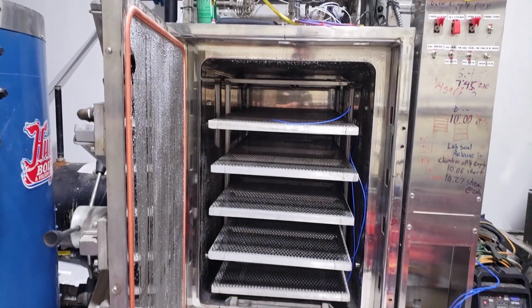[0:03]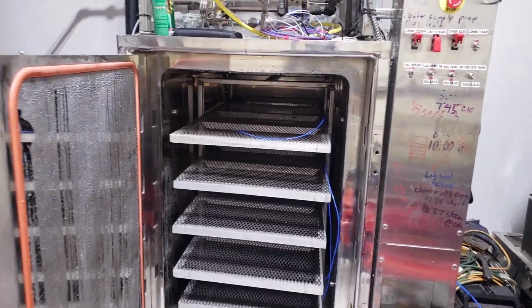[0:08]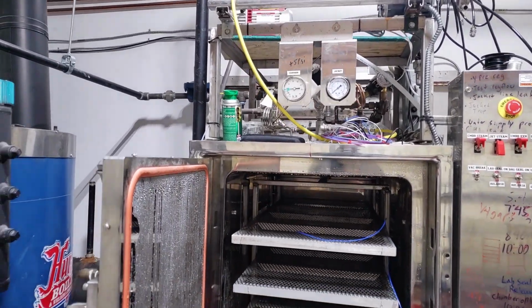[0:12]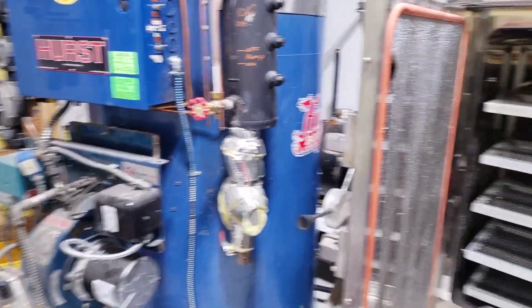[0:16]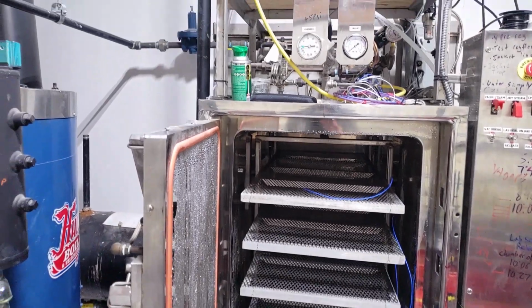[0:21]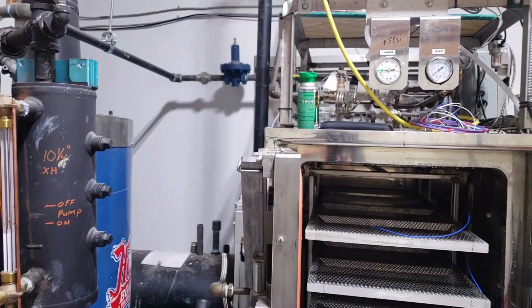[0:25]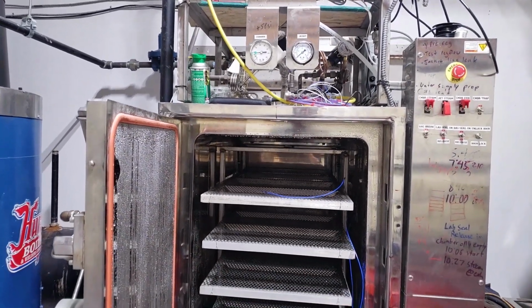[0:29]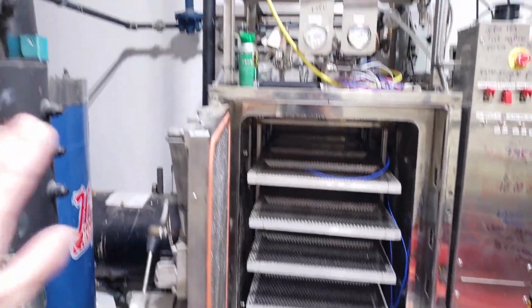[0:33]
All right, welcome. This video is going to be about adjusting and fixing some mistakes that I made on my autoclave. As you know, I have my Hurst 15 horsepower boiler, and I have my 2x3x4 foot double door autoclave for spawn production. Well, we were having a little bit of issues with it coming to pressure in time. It was taking about an hour and a half, almost 2 hours to come up to pressure. And I realized that I've done a couple of things wrong up on the steam supply side.
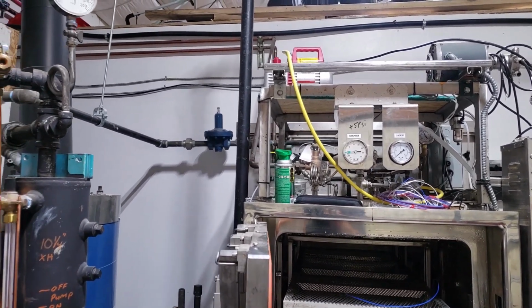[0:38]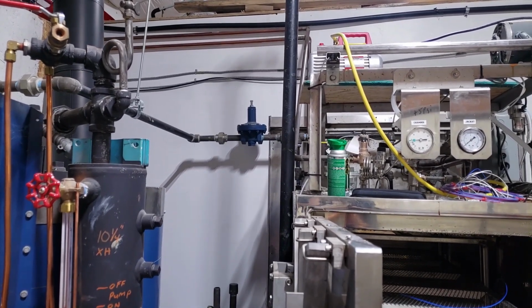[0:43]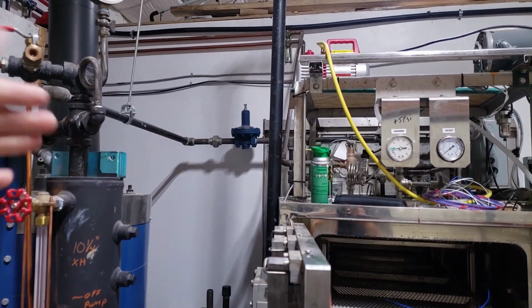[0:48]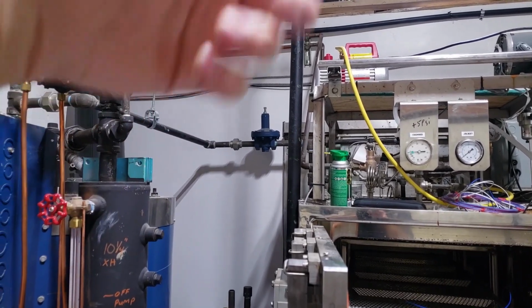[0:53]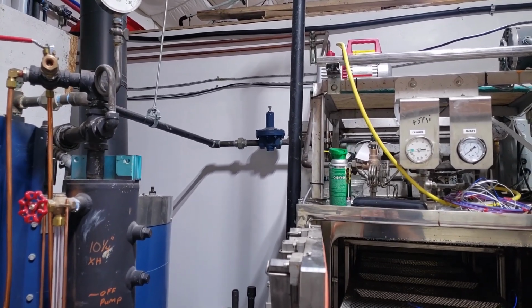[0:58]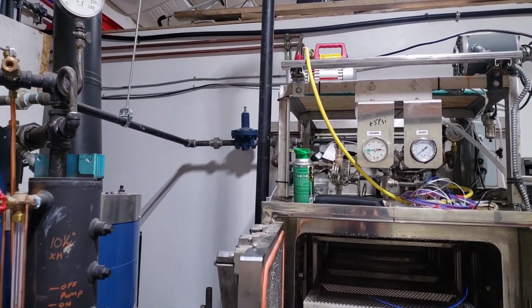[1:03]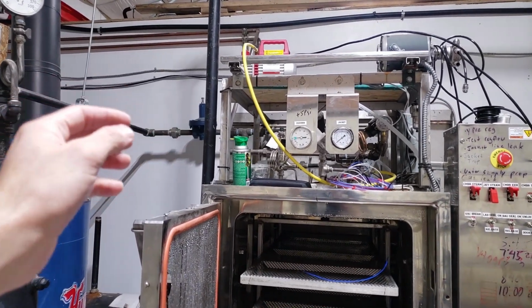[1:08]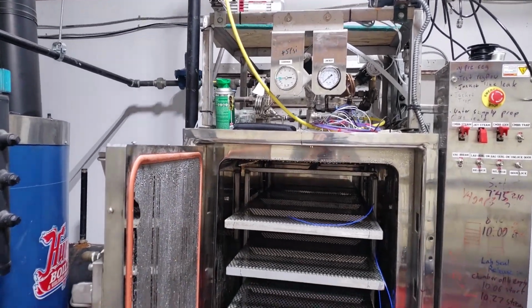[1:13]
One of the major things is that regulator. That regulator is, I believe the term is a direct operating regulator. So basically there's a diaphragm that when the pressure is below a certain amount, the spring lets the pressure go to the other side, okay? The downside of that is it doesn't allow the volume that I need, especially when there's only a couple PSI difference. Like if this is up to 14 PSI and I need to get it to 15 and there's 30 on that side, it's going to be barely cracked open when in reality it should be full wide open while it's pushing all of the steam in, okay?
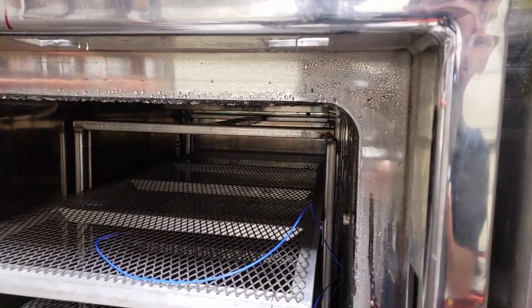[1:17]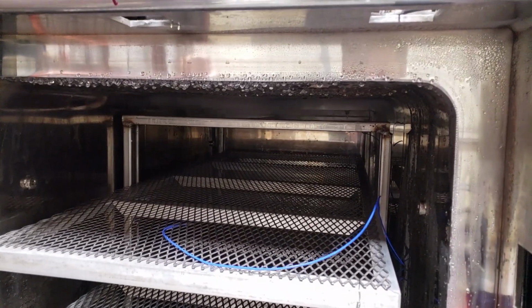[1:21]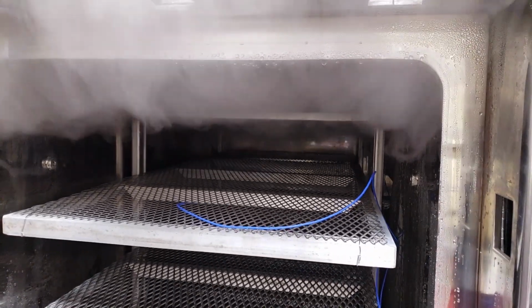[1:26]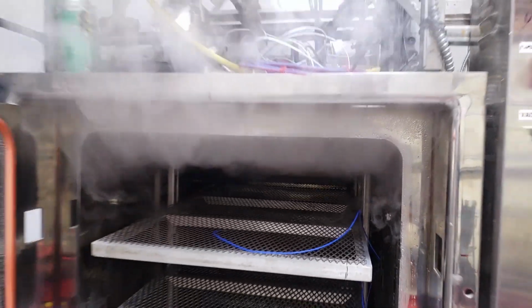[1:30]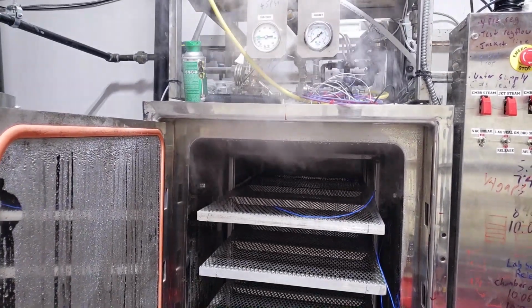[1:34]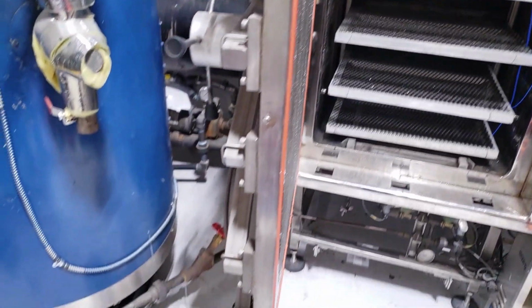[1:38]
So you'll see right here, I'll do a quick example of the chamber steam. Okay. So that's how fast it is right now. Hopefully I'll be able to do an after video, hopefully at the end of this video, after I replace that regulator with a pilot operated valve.
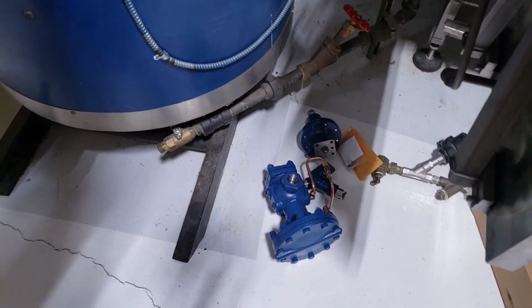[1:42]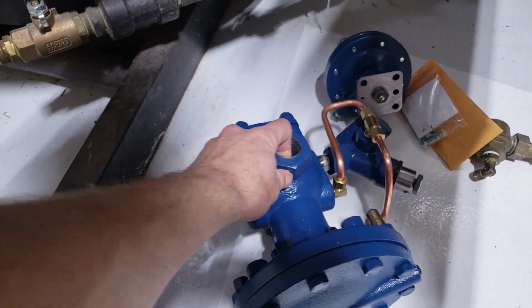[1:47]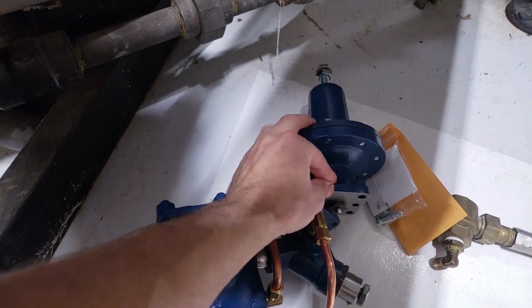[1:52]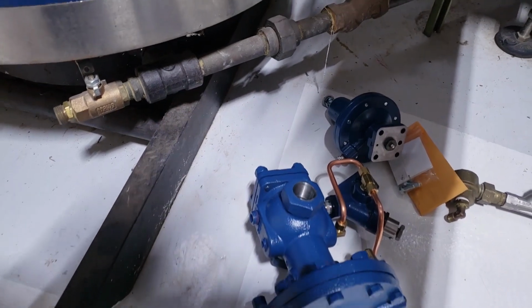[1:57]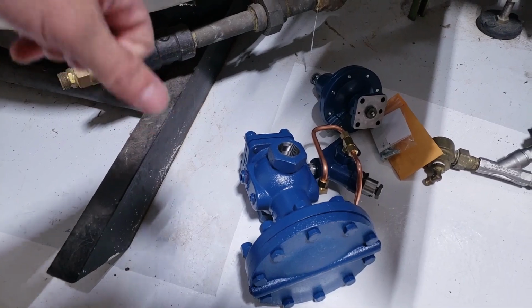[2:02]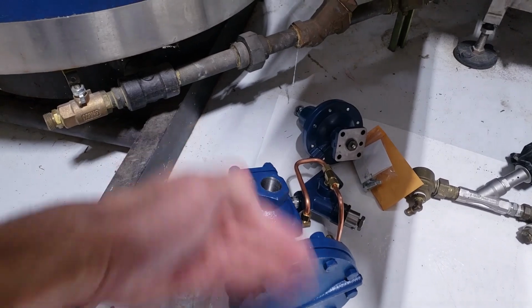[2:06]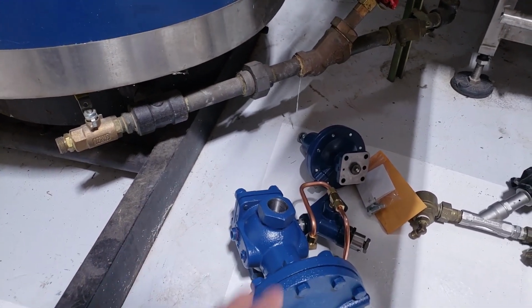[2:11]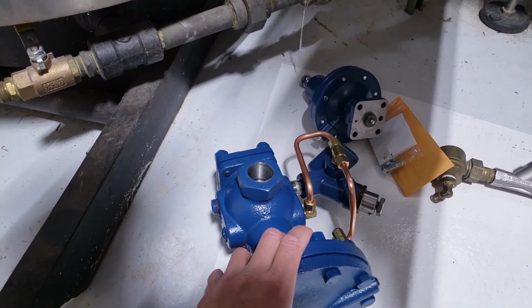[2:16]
So this one works a little bit differently. It has the same diaphragm and valve, but what operates that diaphragm is this secondary pilot. What happens is when this pilot is reading low pressure, it fully opens the entire diaphragm. So one, it'll flow more, and two, it's less likely to clog because it's slamming open and shut versus the other one, which is just kind of cracking and whatnot. This one cost about $800, so it definitely was more to buy, but I should have bought this in the first place.
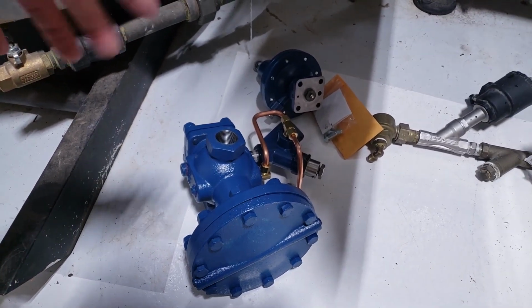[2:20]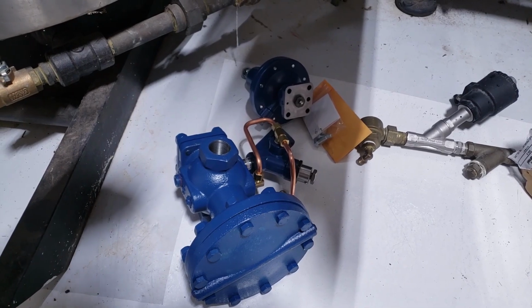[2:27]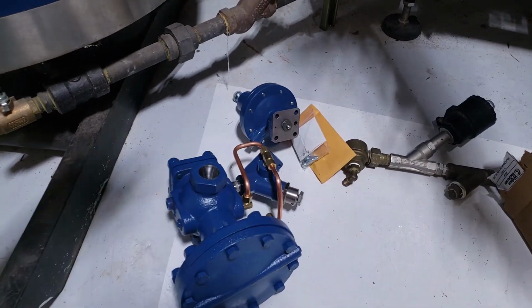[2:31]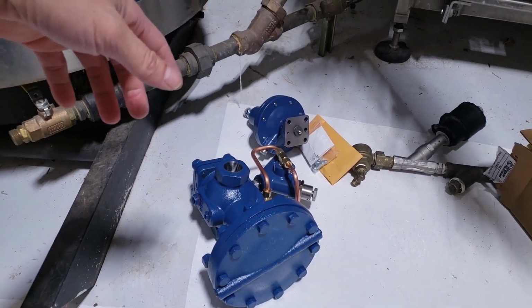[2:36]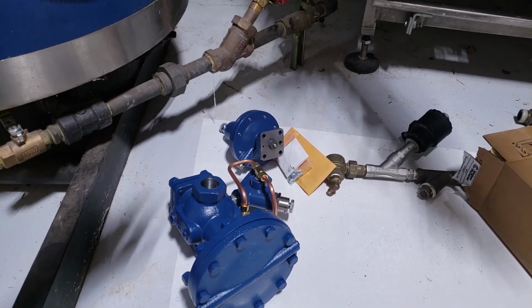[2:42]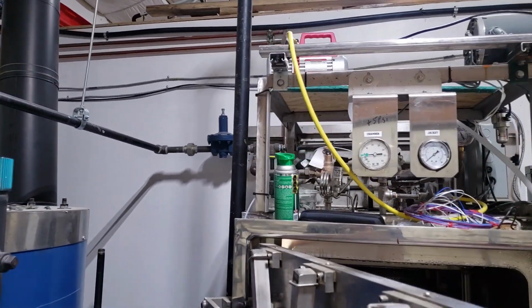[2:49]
It's definitely one of those things where the boiler installer was not really familiar with autoclaves, neither was I, and I probably should have paid somebody to look over it. This is definitely where consulting and having a professional do stuff saves you money in the long run, because this mistake cost me probably a couple $1,000s in spawn production because we haven't even started yet because of this. And on top of that, $600 in a regulator that is going to sit on a shelf now because I bought the wrong one up here. So I'm going to go ahead and get started.
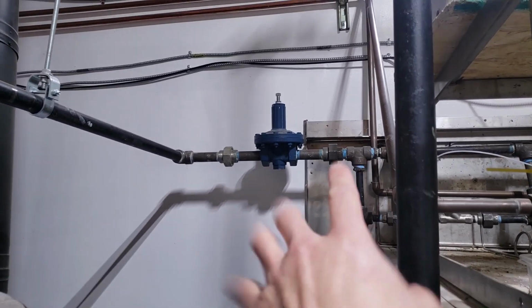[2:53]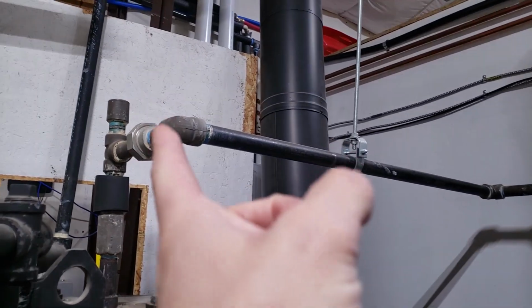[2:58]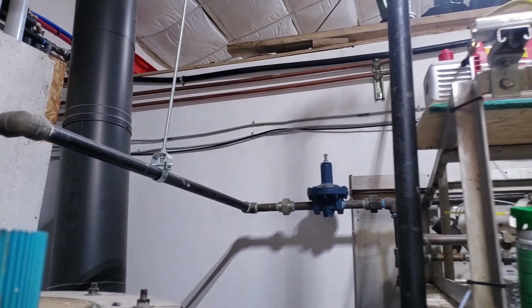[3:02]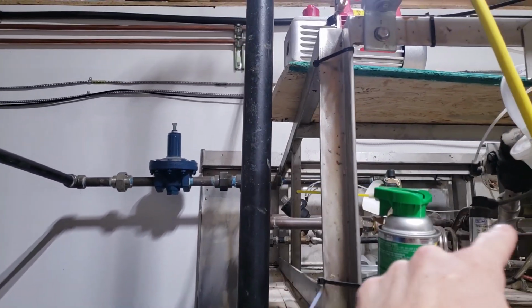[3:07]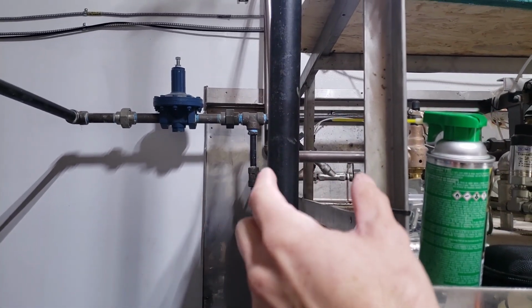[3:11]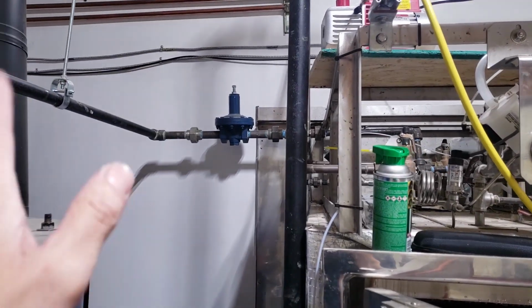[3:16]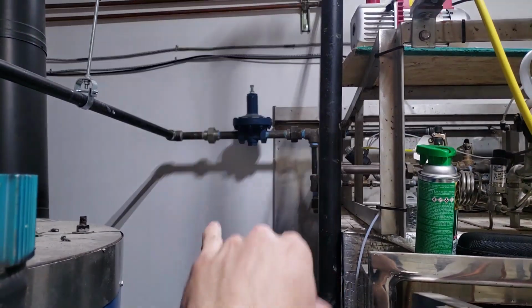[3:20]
One thing that I'm glad that we did, you can see these unions. That makes it very easy. Whenever you're doing steam fittings or natural gas, make sure you put unions in whenever you do a branch. It makes it a lot easier to maintain parts. So we have a union there. We also have another union, I want to say further down around the control valve. That way if we need to maintain that part, otherwise you have to take apart the whole thing just to get at one part. That's the beauty of a union. So I'm going to go ahead and take that union down and put the new regulator up.
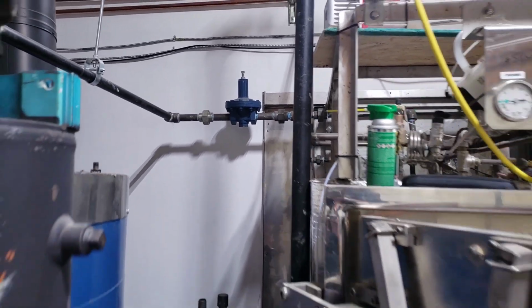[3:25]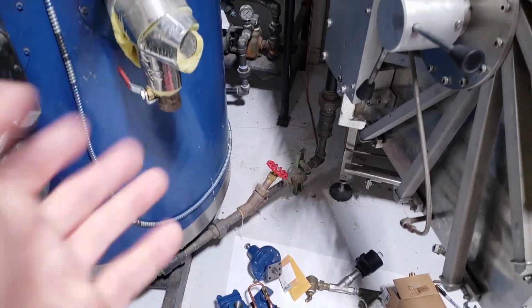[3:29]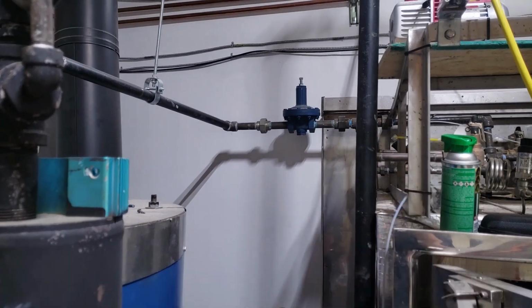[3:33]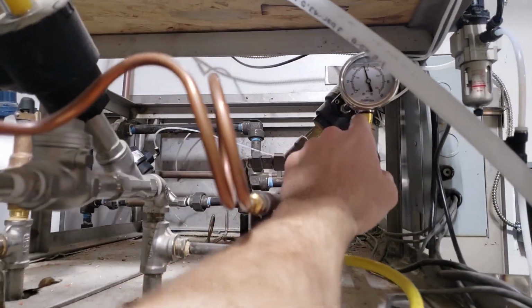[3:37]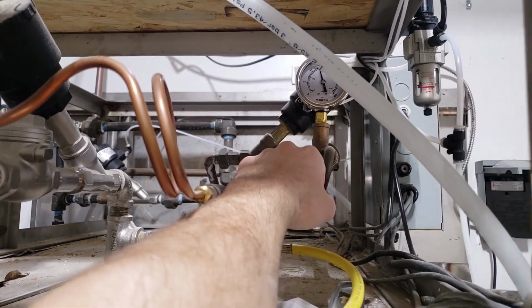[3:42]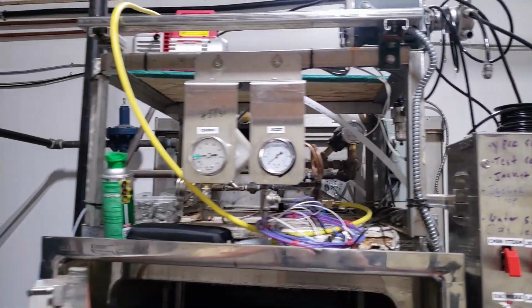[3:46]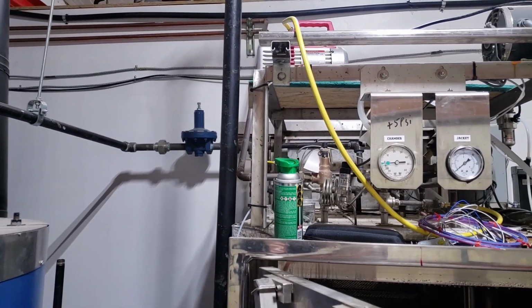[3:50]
The one thing with the pilot is it needs to have a reference that is 10 times the pipe diameter. So this is a 1-inch pipe, it would have to be a reference pressure at least 10 inches down. I'm going to go all the way over here, which is the end of the jacket manifold. I'm going to put a T in there and then tap off of that to get my reference pressure. That way it should have a nice low reading when everything's open, so it'll stay wide open until everything comes up to pressure.
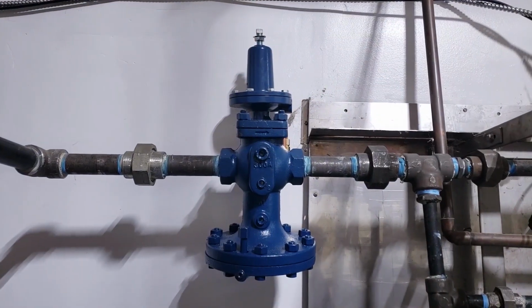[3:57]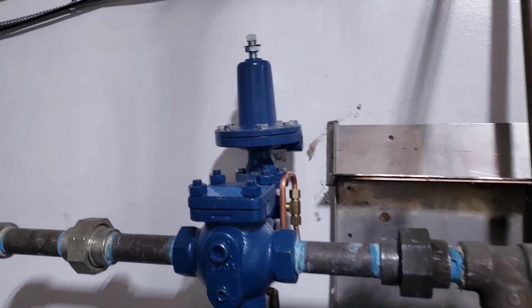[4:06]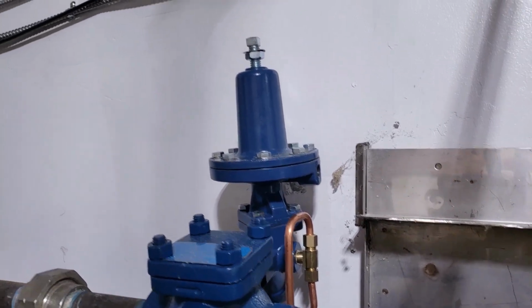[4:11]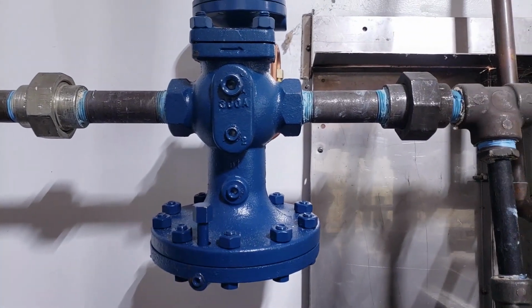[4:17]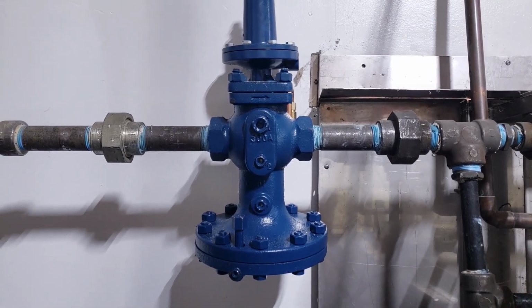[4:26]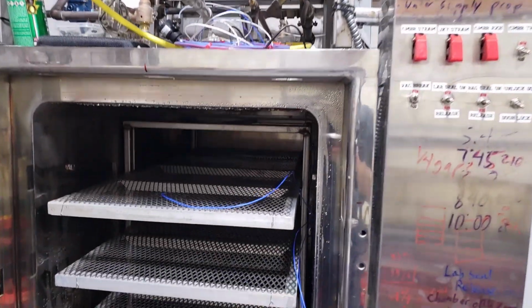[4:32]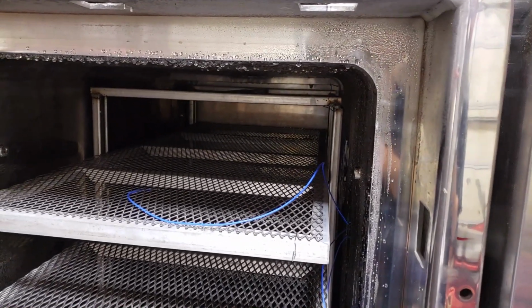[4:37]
All right, welcome back. The pilot operated regulator is now installed. I still have to do the pressure sensor, which goes on the little port in the middle of the picture there on the side of that pilot, on the top regulator. Once again, that pilot operates the big valve to be fully opened or fully shut. So even though I don't have it hooked up, it is still going to be fully open. It won't regulate, but it will fully open and I can test the flow. I already cheated and tested the flow, and what a difference. This should really make a difference with running the cycles. 3, 2, 1.
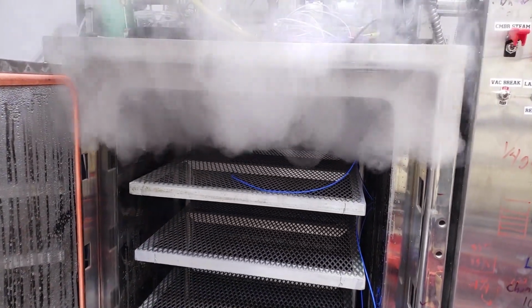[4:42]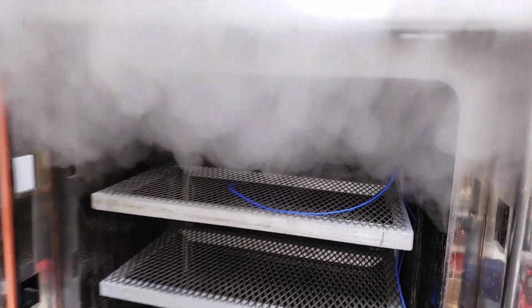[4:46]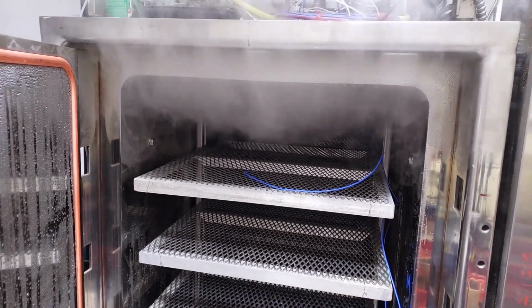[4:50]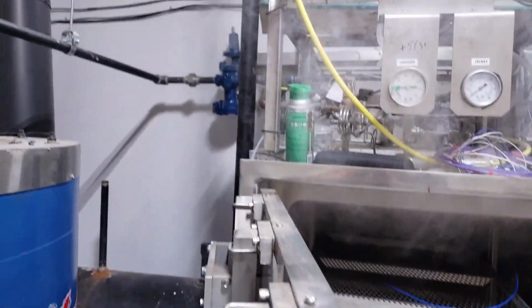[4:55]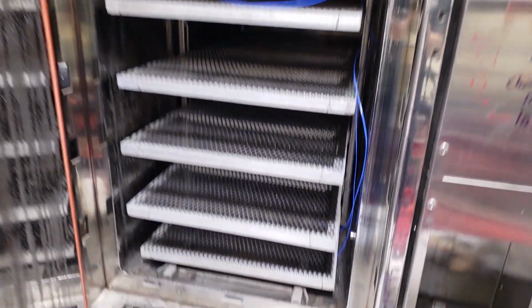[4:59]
Night and day difference. So that I'm very happy about that. Once again, wrong regulator, should have been pilot operated and it wasn't. So the next thing that I'm going to be working on today is my traps.
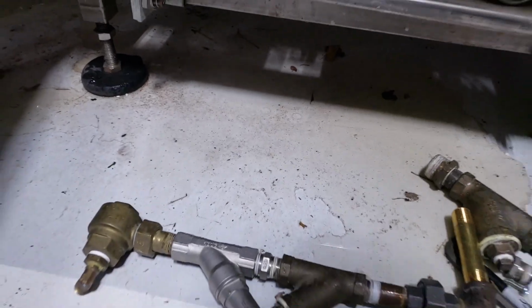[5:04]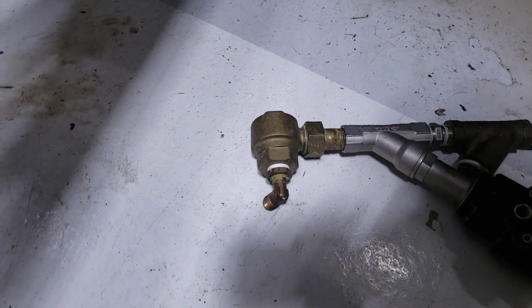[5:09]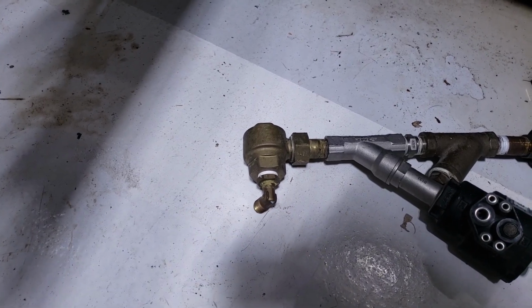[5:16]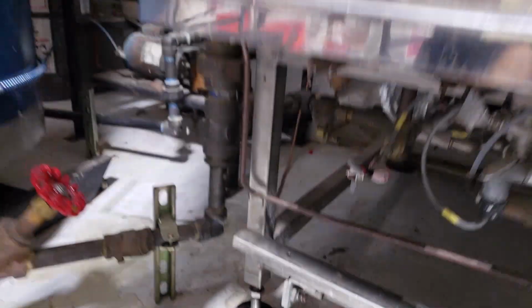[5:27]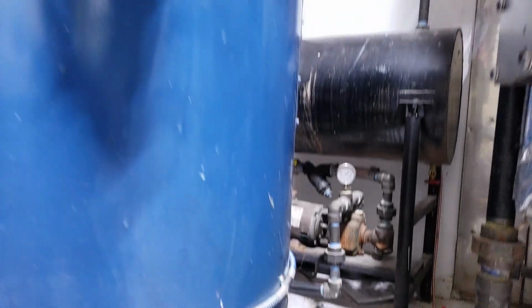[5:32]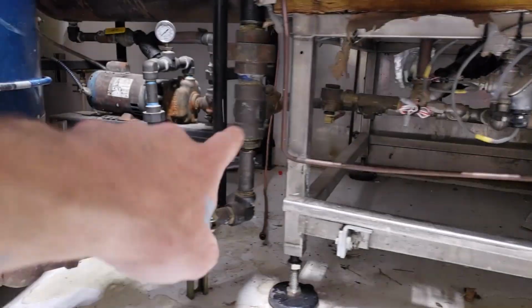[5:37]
For those of you who don't know what a trap is, this is the trap, okay? It's basically kind of like a thermostat switch. When it is below a certain temperature, usually like your steam pressure, 220 or whatever it is, when it's below that pressure, that temperature, it's going to be open. So all of the air and cold water goes out it, and then it either goes back to the holding tank, which is atmospheric in this setup, or for my chamber, and now that's the jacket. For the chamber, I just go right to the exhaust, okay?
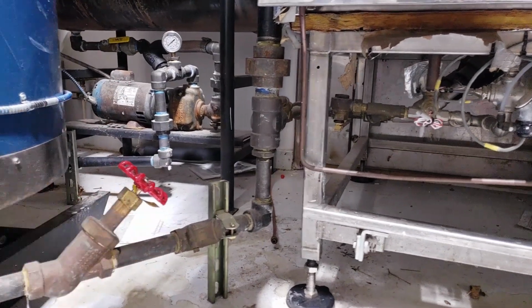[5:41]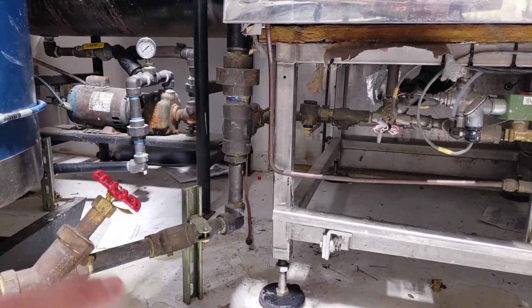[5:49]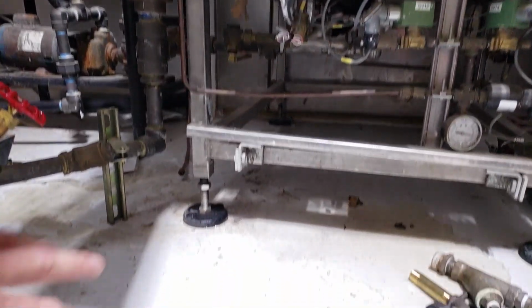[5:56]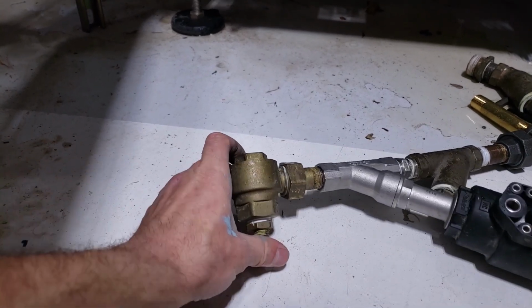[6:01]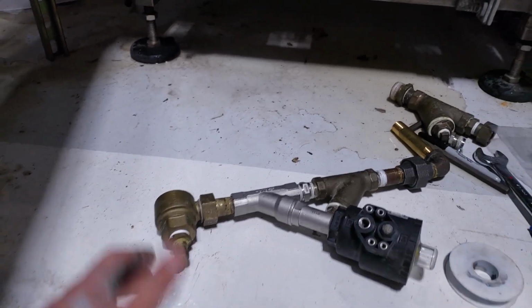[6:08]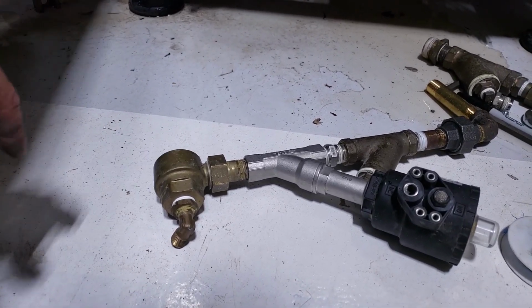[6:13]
Because I don't want to be putting millet tea water into my boiler. Anybody who's ran a pressure cooker knows that at the end of a cook, all your water is like a tea of whatever the heck you're cooking, and I don't want to feed that into my boiler and crap out my boiler. So one thing that I ran into is that the trap on my jacket last cycle was hanging up. It wasn't closing. So I talked to TR, who also has a boiler, Earth Angel Mushrooms, and he said, oh, well, just turn your switch off. I said, well, I didn't have a switch.
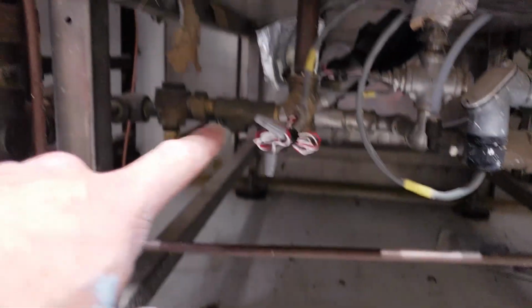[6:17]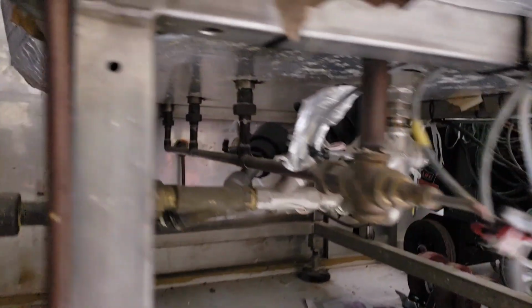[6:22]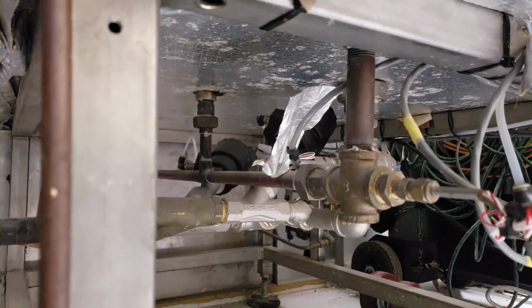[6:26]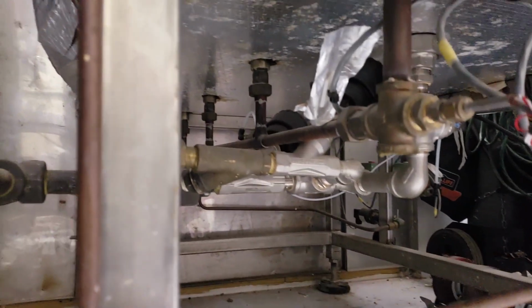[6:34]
So what I'm going to do is, I have a switch for my chamber. You can actually say I have two valves. These are pneumatic valves, okay? So I switch an electric switch up there. That switch is a solenoid. Then it supplies air to these little pistons that actuate these valves. So you can see I have two of them there. One of them is my exhaust.
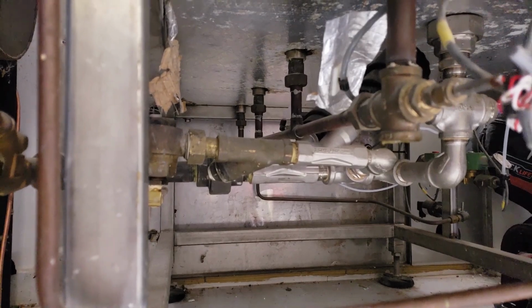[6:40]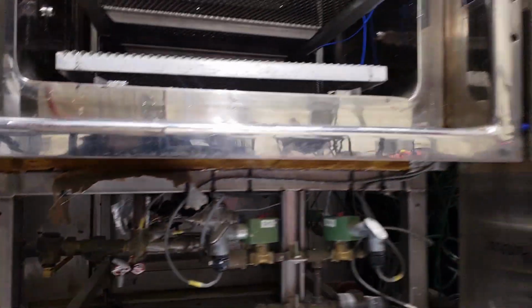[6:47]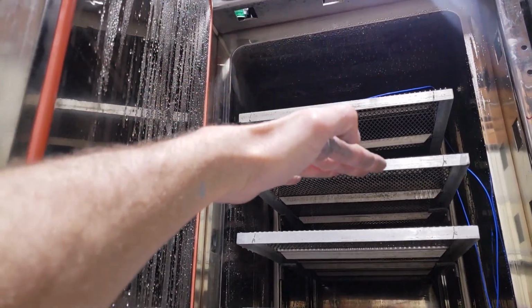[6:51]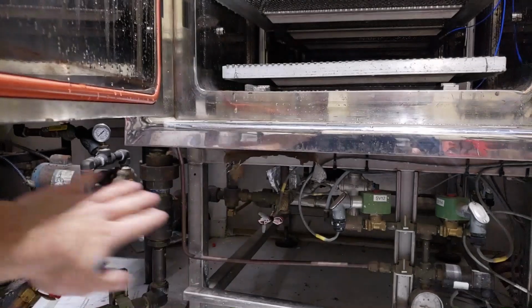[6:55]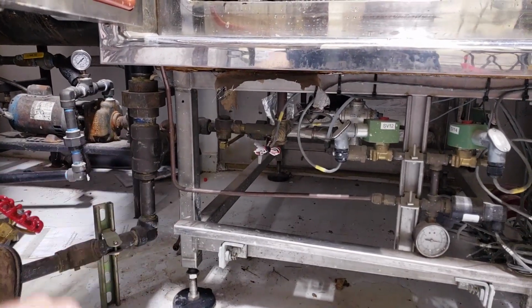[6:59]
That's if I want to do a gravity cycle, where you just open your exhaust up and then inject the steam. And what happens is you saw that blanket of steam coming down. Well, that blanket keeps pushing down. And as long as your exhaust is wide open, it'll push all the air out. And then you turn off your exhaust and you switch to trap, and then it starts building up pressure.
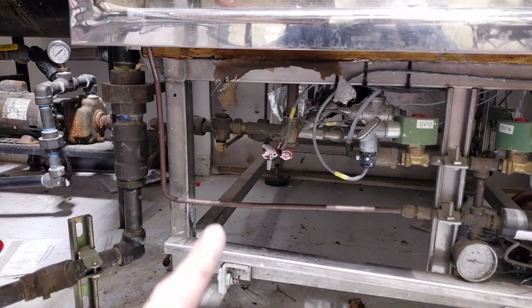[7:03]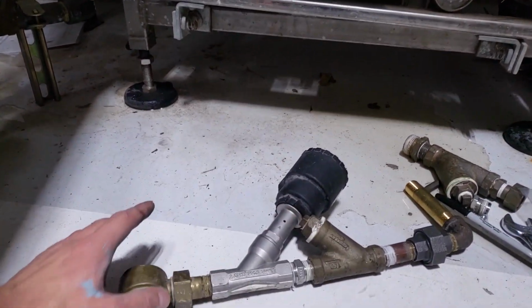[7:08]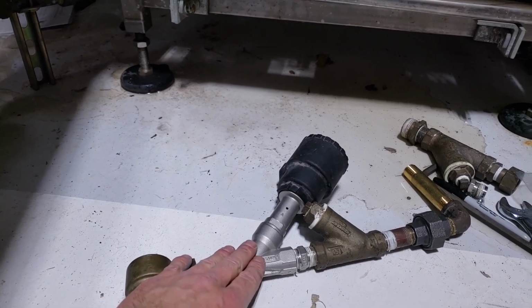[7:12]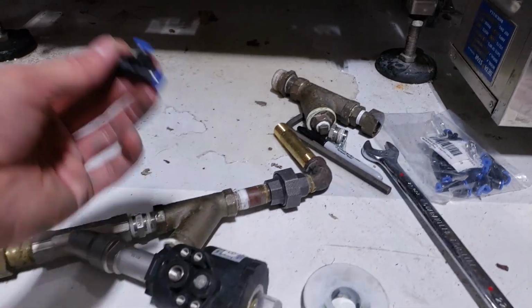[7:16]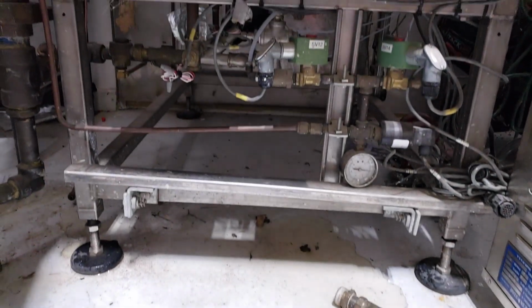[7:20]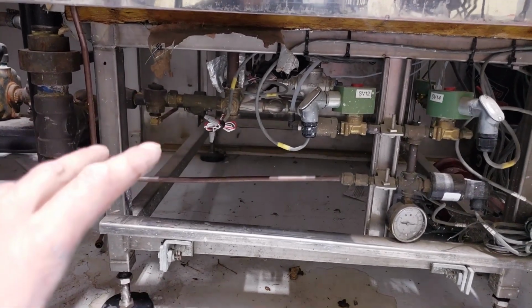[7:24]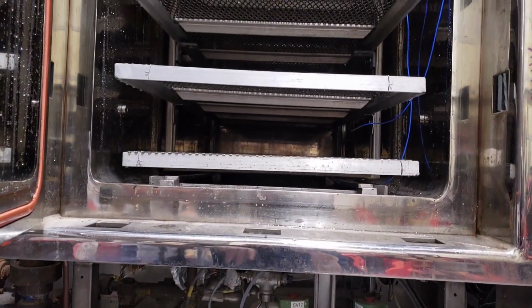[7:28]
So basically, I'm going to have both of the traps, chamber trap and jacket trap, both on the same switch, on the same airline. So I bought a little tee, and I'm just going to branch off of it, and that's it. So I'm going to do that next, and then I'm going to run the cycle, check that it is actually quicker than it was before, which I'd imagine it will be. Just looking at that steam rushing in, it was a huge difference.
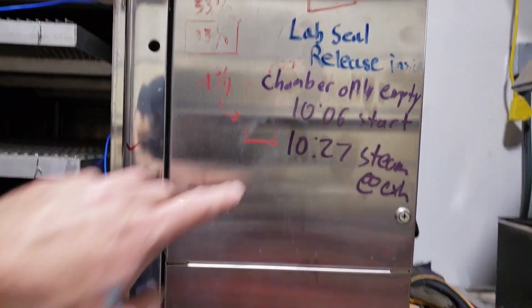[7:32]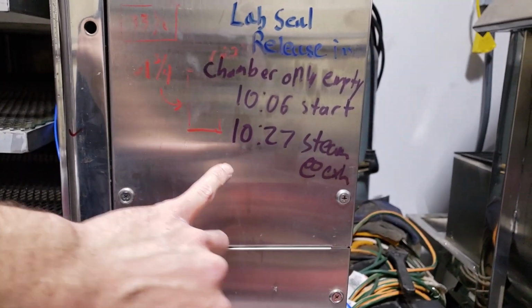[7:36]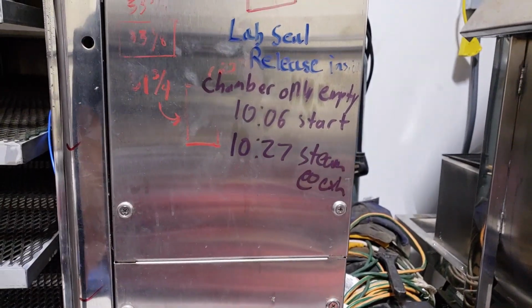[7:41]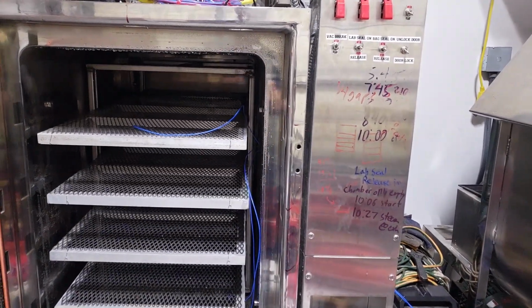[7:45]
So before it took, from the start, this is chamber only, no jacket, it took 20 minutes for steam to hit the exhaust. So I'm going to see what it is. Same test with the new valve.
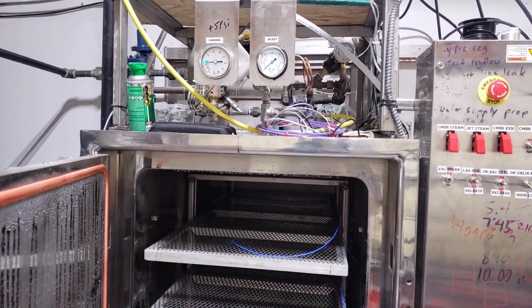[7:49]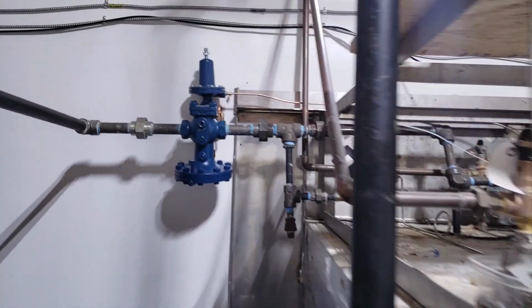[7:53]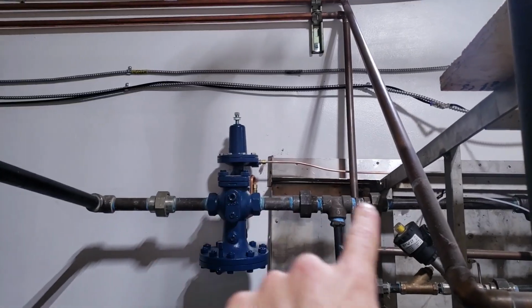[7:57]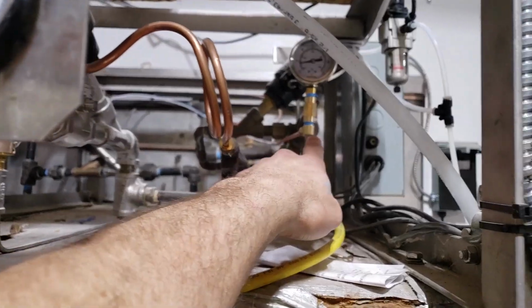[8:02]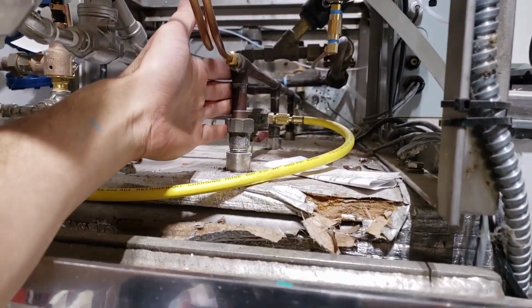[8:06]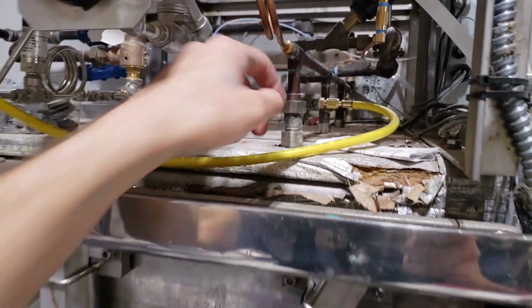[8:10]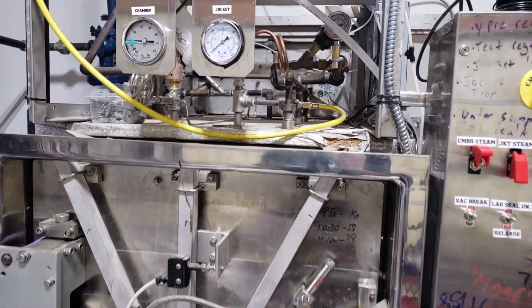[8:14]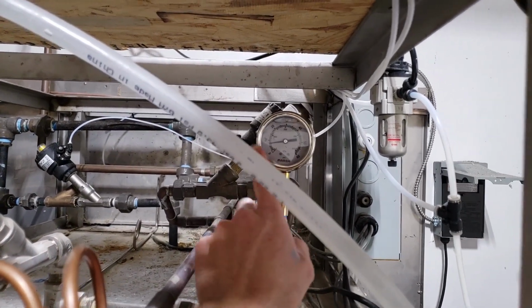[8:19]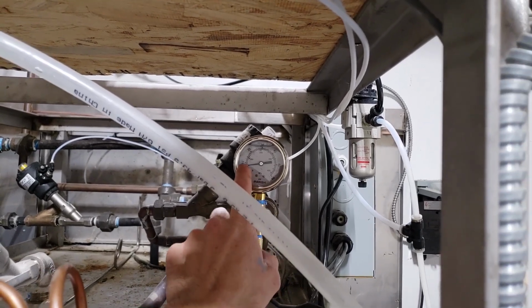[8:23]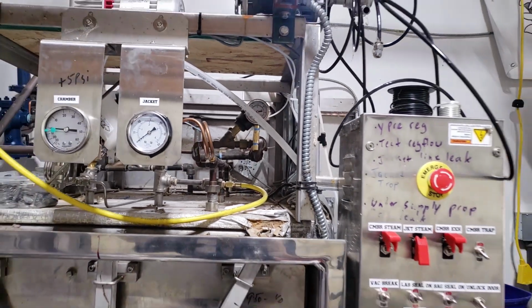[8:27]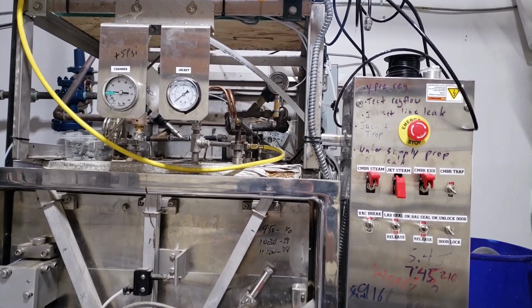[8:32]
Okay, I got my steam line in the pressure sensor. That's the copper line right there. I teed off of my manifold here. That's actually the manifold that feeds into the manifold that feeds the jacket. You can see there's four jacket inserts for the steam. So off the bat, I could tell right away that we're doing much better, because with it full flowing into the chamber, I actually have 9 PSI of steam. Previously, this was showing zero. Like, it was flowing, but there was not enough flow with the restrictions to actually make any pressure. So that's already telling me that we have a lot more steam.
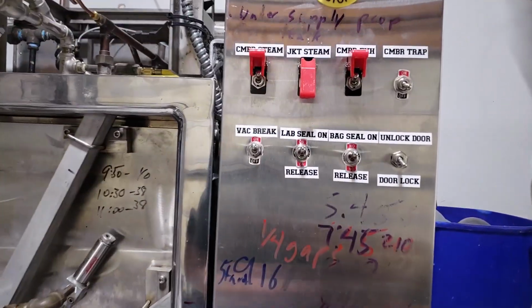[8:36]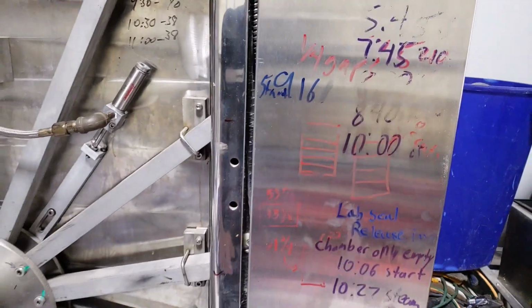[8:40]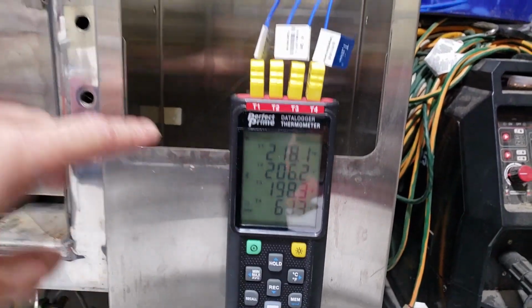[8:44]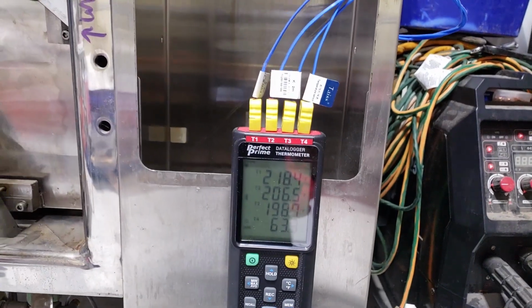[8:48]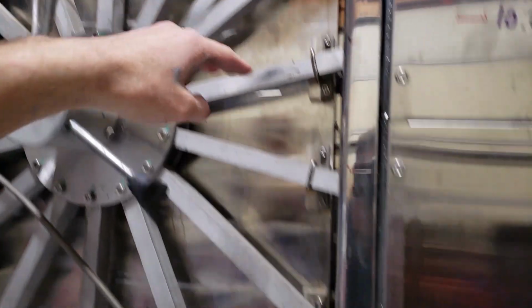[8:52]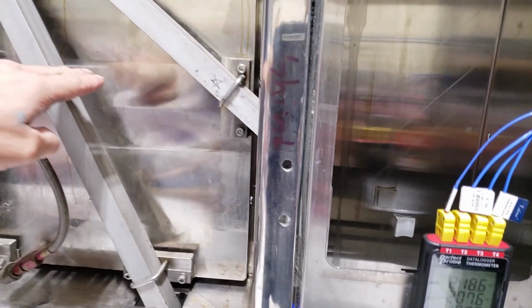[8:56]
I started this at 17. It is now 21, or 16. It is now 21, and I have temperature sensors. This one's on the inlet. This one's about on the first shelf. The third one is actually just a couple inches from the bottom.
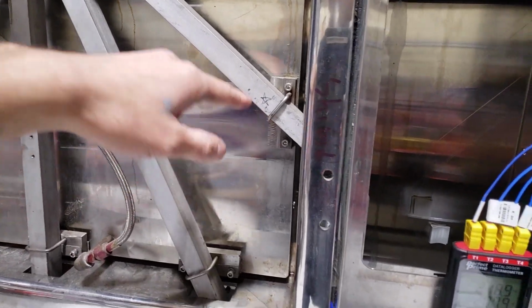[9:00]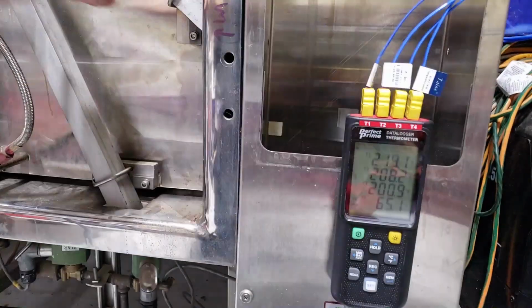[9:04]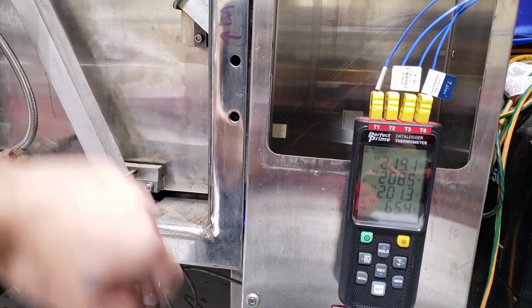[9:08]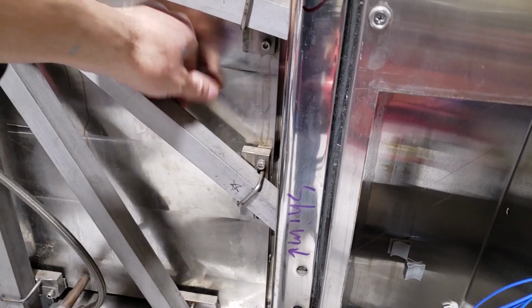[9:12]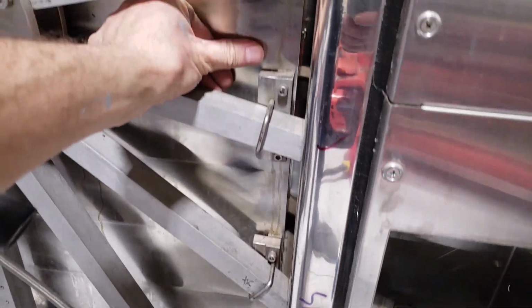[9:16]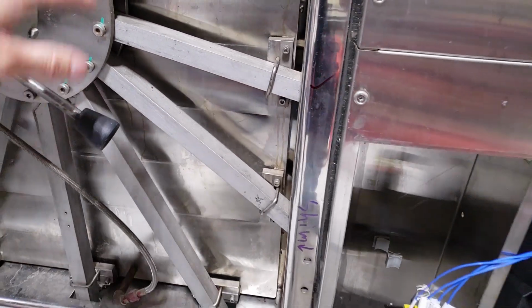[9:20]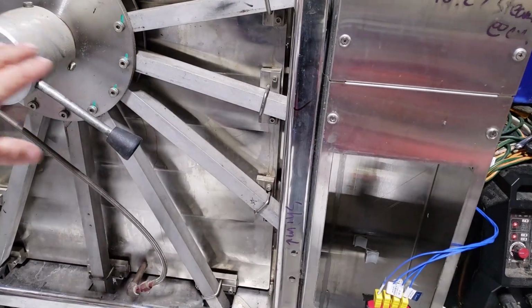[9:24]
And that was the cool thing that I noticed last time, that it's really like a wall. This one's 200 degrees, and the next one that is only maybe 6 inches lower is still only 65 degrees. And you can even feel it. When it was moving slower, you could really feel it. I could feel right here is about 100, here is like room temperature. But when it took 20 minutes to do that, I could almost feel the wall, the heat moving down.
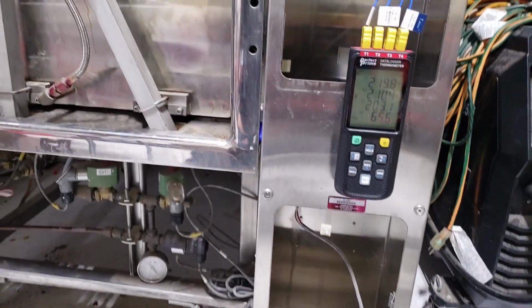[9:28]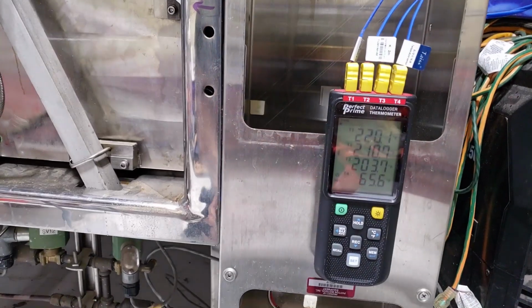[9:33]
But yeah, we could see it for sure with the gauges. So I'm using this data logger. This is a Perfect Prime. I do not like it. Do not get this data logger.
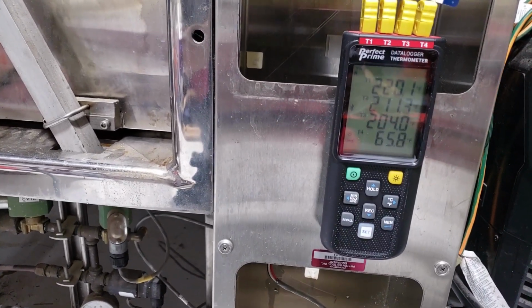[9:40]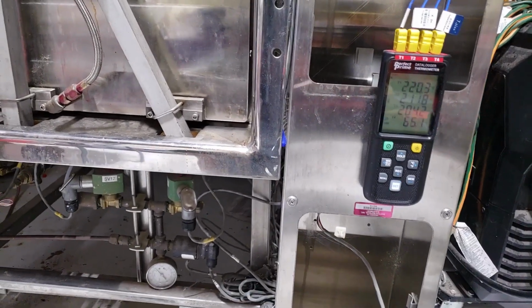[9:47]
The main thing that I don't like about it is you cannot have external power. So you have to run it on batteries. The batteries last 8 hours, and then that's it. So if you're going day in and day out operations using a data logger, well, this is not for you.
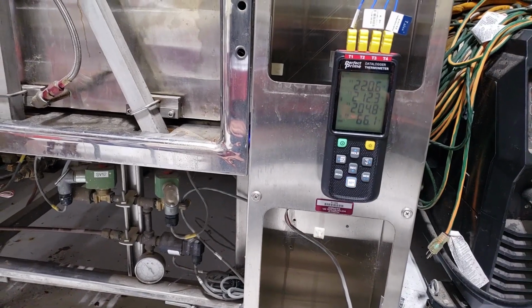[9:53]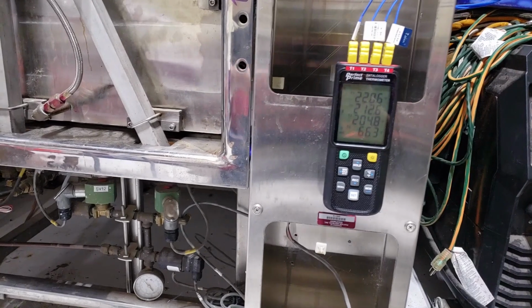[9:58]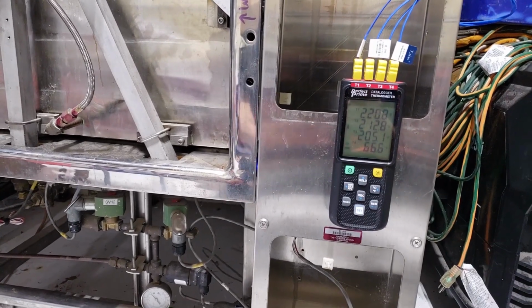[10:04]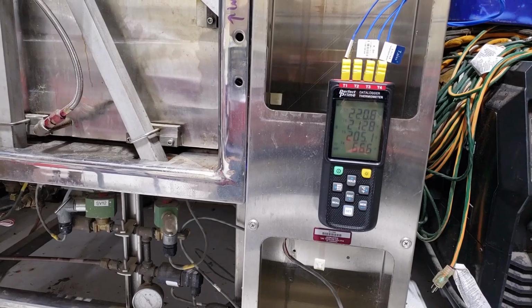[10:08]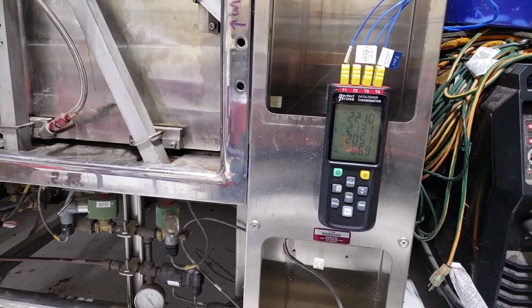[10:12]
So I'm trying to find one that can get plugged in, that every day we can run the log. It'll save the autoclave cycle, just in case, if we want to make sure that the cycle ran complete, especially when we get into automating it. I want to make sure that nothing went wrong on the run during the automation cycle. So I'm going to try to look around for a better one.
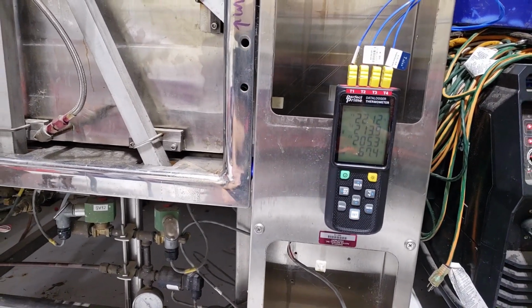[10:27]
This was about $180. Data loggers go up to thousands of dollars, but I'm trying not to spend that much. But I definitely want one that'll at least last a week without having to change the battery. I'd rather it just be AC or have a DC converter for it.
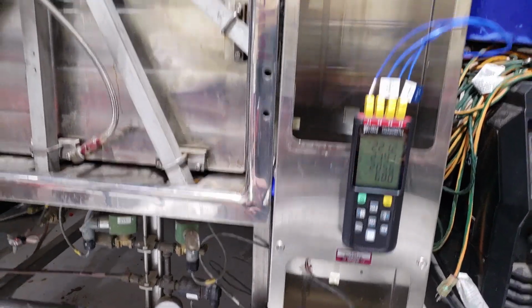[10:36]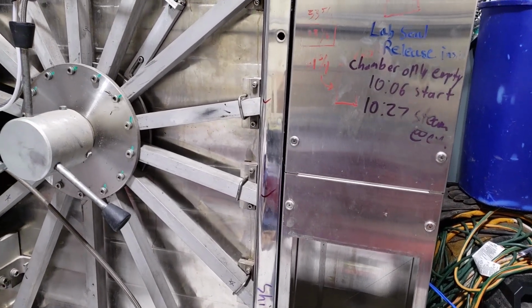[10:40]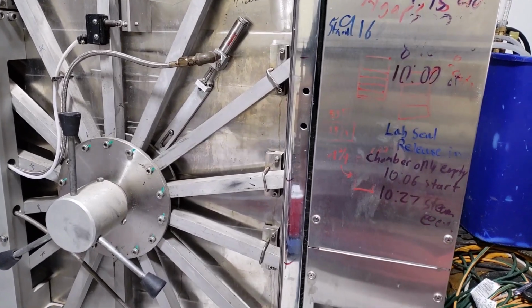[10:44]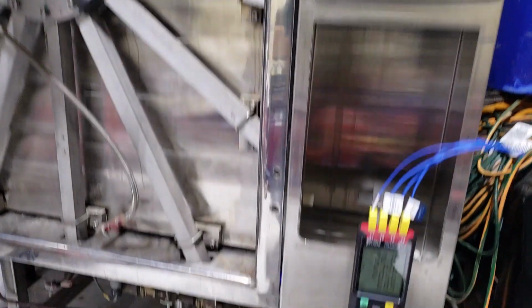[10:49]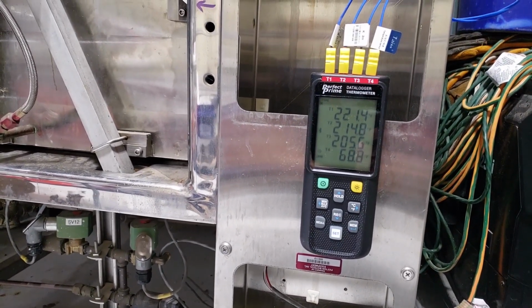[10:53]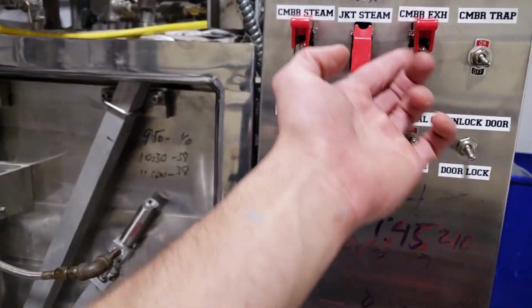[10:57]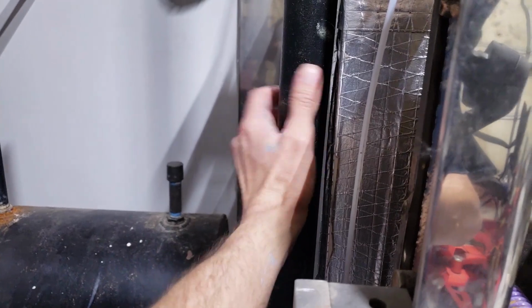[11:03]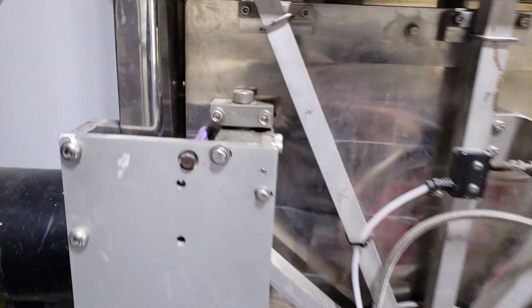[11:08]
So this is a gravity cycle. Like I explained before, I have my chamber exhaust open. My chamber steam is on. So it's just going to exhaust out through my exhaust pipe. This is actually cold right now because it's not up to pressure yet. It's not pushing steam out the exhaust yet.
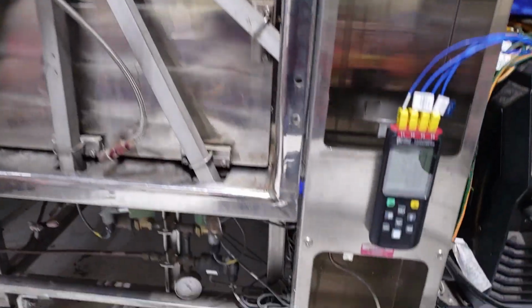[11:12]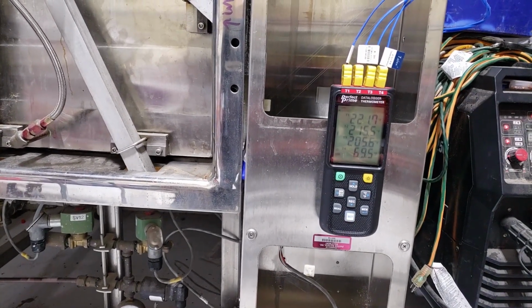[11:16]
Looks like it's about to hit, starting to creep on that last one, and it'll just jump. It'll go from 70 degrees to 80, 90, 100 to 200 in a matter of 30 seconds, maybe a minute at the most, because it's just pushing that wall of air down with a wall of steam. So super cool tool.
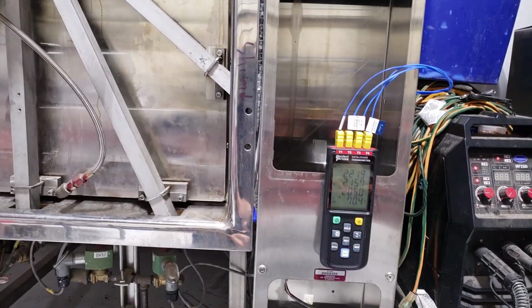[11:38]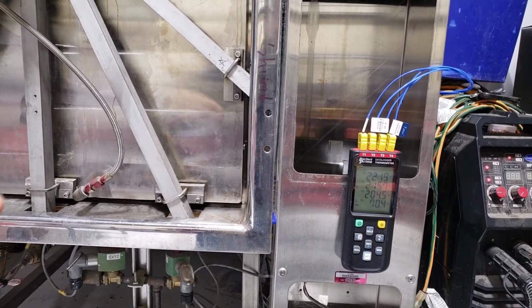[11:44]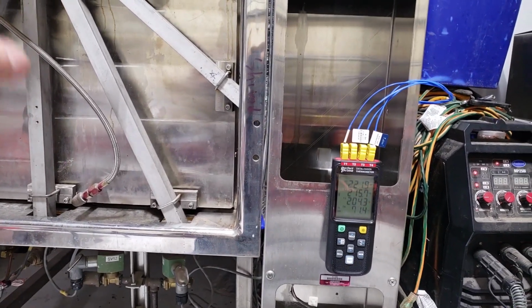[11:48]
I use the sensor in the bags as well. It's not just for doing empty chambers. Usually I'll do intake, exhaust, and then I'll do two in the bags. I'll do top bag and bottom bag to probe the bags.
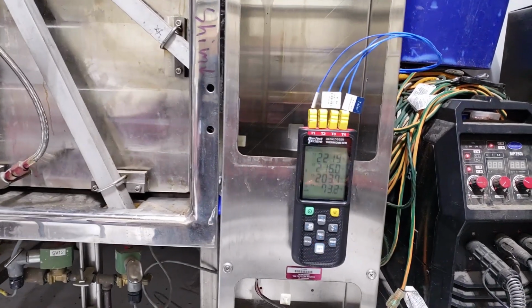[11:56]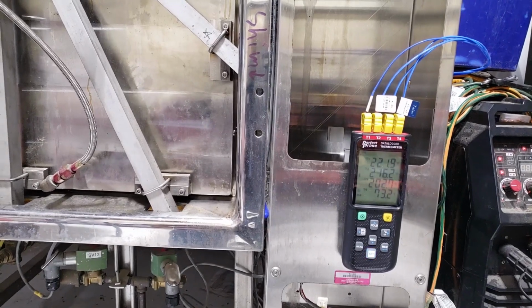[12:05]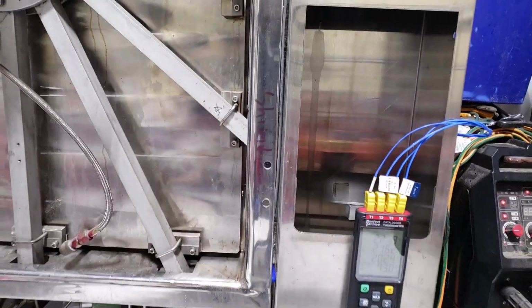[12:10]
I think that's actually in the water in the bottom. That's why it's not spiking as hard. From all the testing, I had about a half inch of standing water. And I'm not sure if the pressure has pushed all the water out of the bottom of that chamber yet.
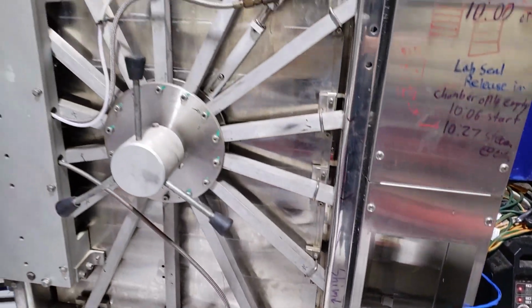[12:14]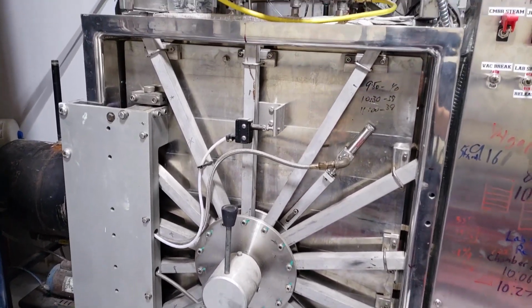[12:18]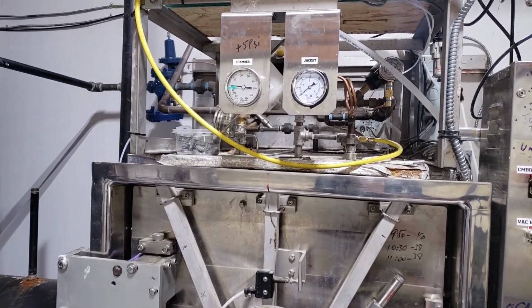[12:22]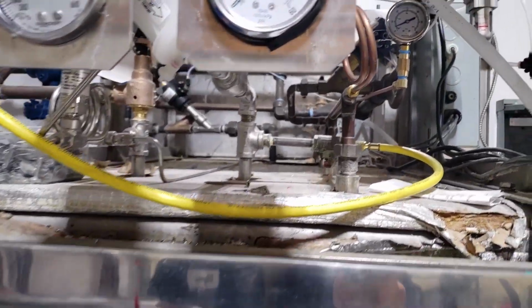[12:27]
Something's screaming at me. I'm losing steam pressure. I don't want to have the boiler running right now just because you can't hear me over the blower blowing. So I have it turned off. We're down to like 10 PSI of steam out of the boiler. So you can see that's already starting to drop off. But so far I'm pleased.
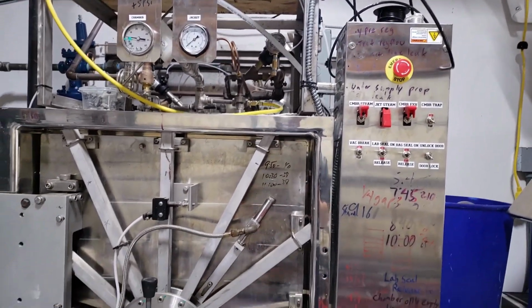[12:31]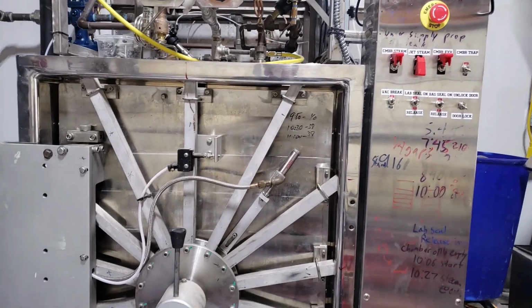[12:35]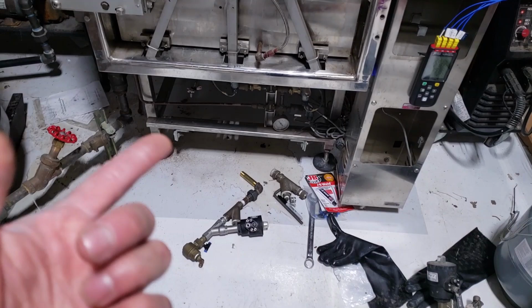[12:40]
I could tell you it's at least twice as much steam. I think that solved the problem. I still got to do the trap, but that's a pretty easy install. I just got to put it all together and throw it in.
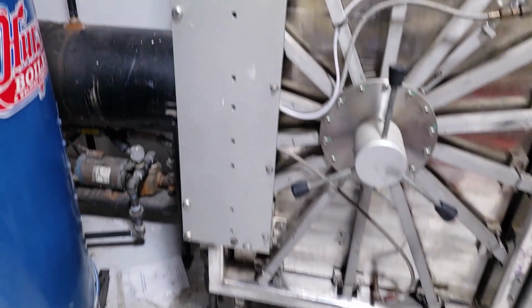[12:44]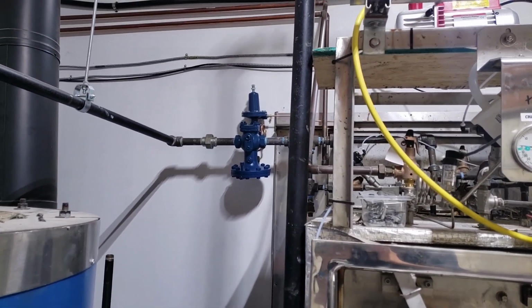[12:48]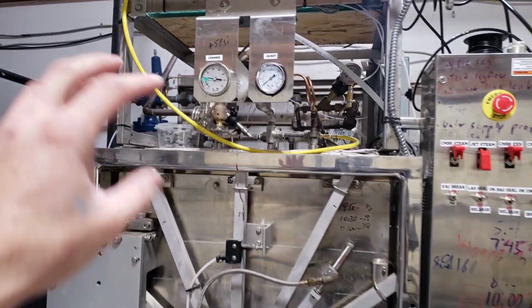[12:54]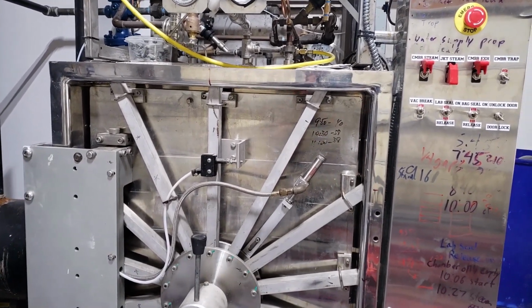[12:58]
But yeah, this just goes to show, paying people to do the job and have a consultant. I really should have pulled in a company, but the only company that I talked to was Betastar. They wanted like $1,200 just to have a guy drive out here for the day, and then it was like $200 an hour. So I chose not to.
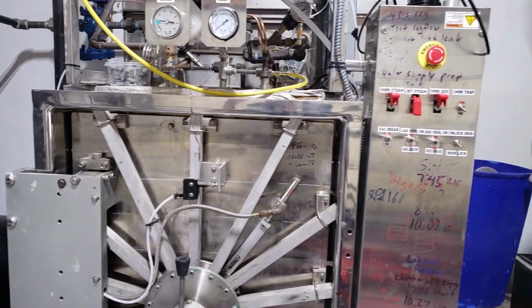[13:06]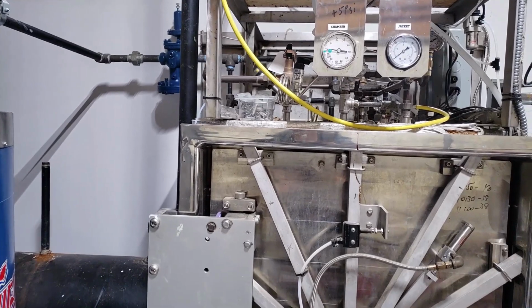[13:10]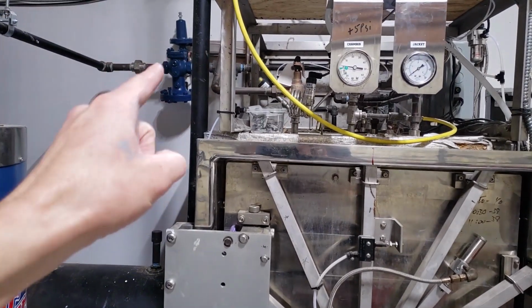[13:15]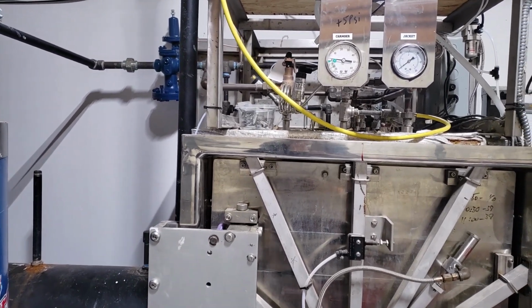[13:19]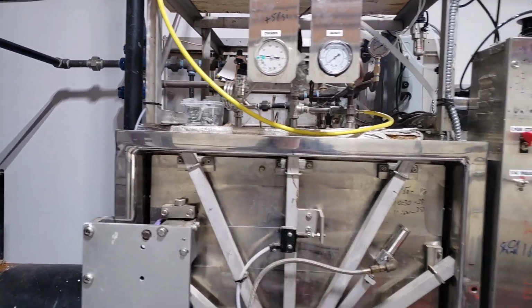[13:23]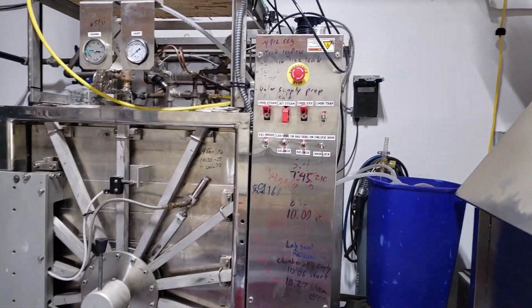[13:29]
In the end, it actually worked out better, I guess, because I don't know, right? I don't know what I did wrong on this, but that was at least one mistake that I do know about that cost me $700 and 2 or 3 weeks of not making spawn. So yeah, it just goes to show, if you can hire an expert or get somebody on board to show you the product, definitely do that.